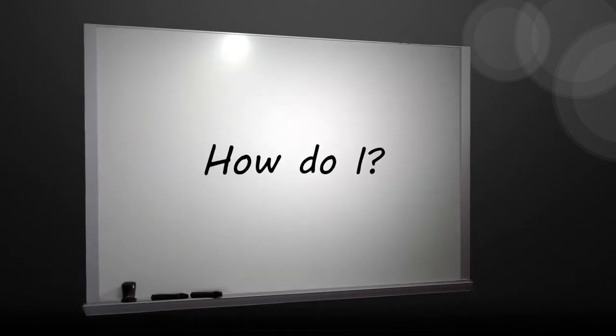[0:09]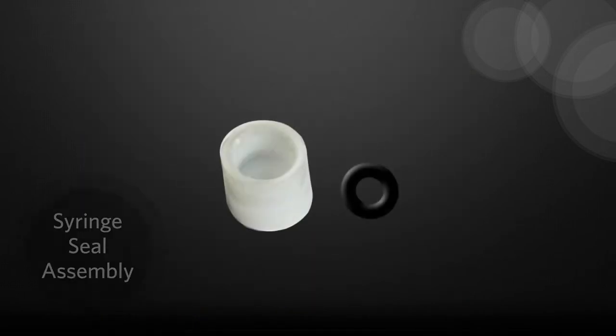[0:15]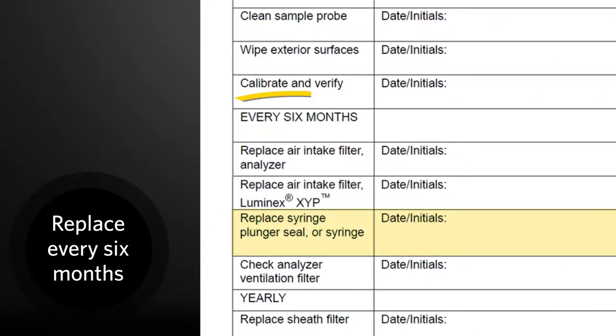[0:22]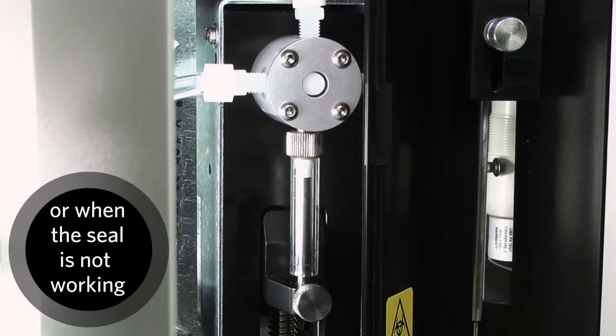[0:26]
How do I replace the syringe seal on the Luminex 200 instrument? Let's take a look at the procedure for removing and replacing the syringe seal. This routine is part of the semi-annual maintenance schedule, or is to be used if the seal is not performing properly.
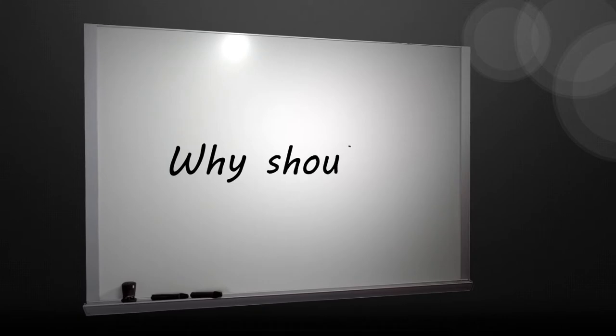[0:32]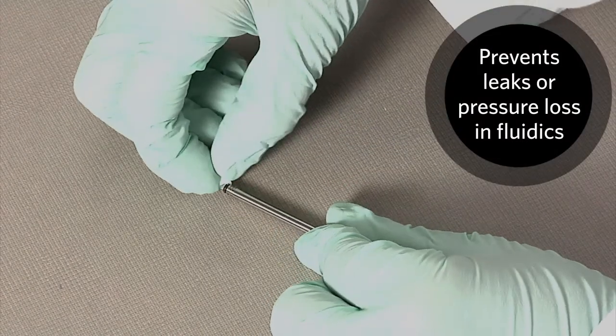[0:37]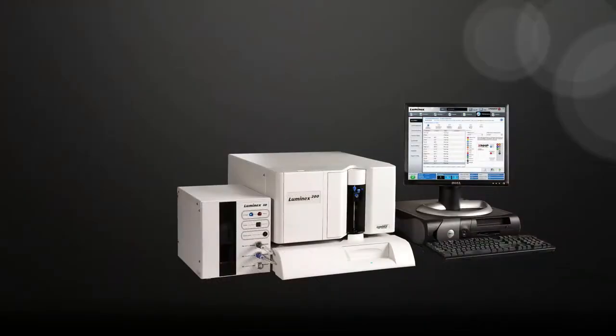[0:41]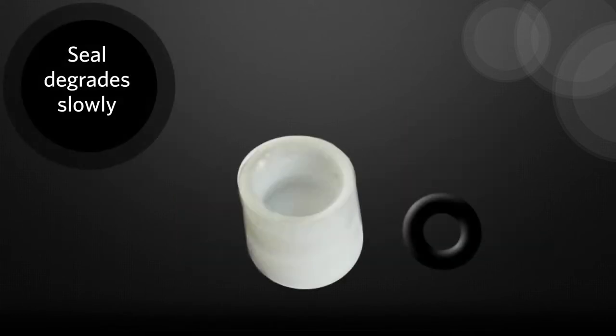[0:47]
Why should I replace the syringe seal? Replacing the seal will prevent leaks or pressure loss in the fluidics system. This is a preventative maintenance procedure to avoid any downtime on the Luminex 200 instrument. In normal use, the seal will degrade slowly.
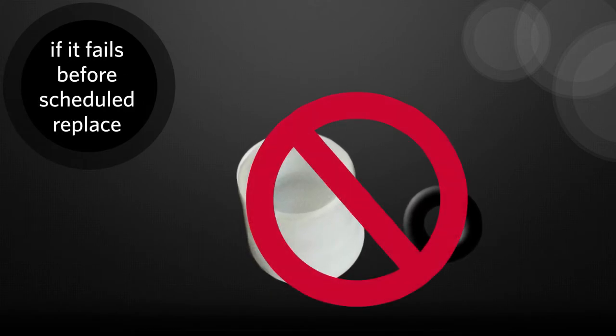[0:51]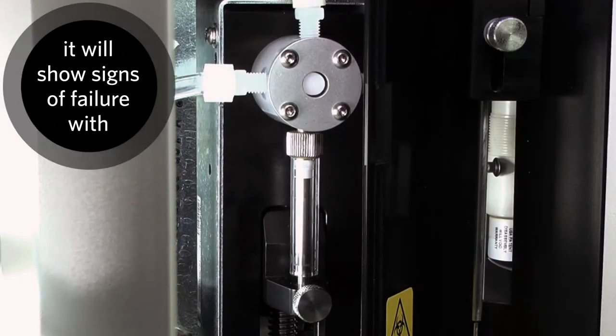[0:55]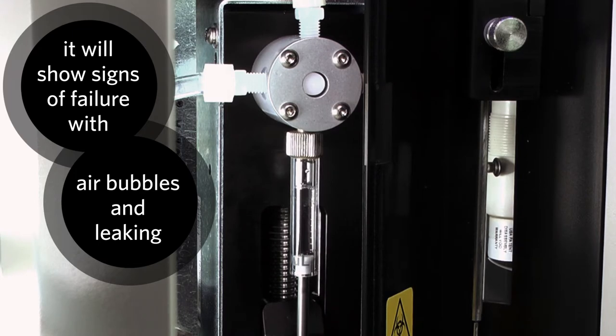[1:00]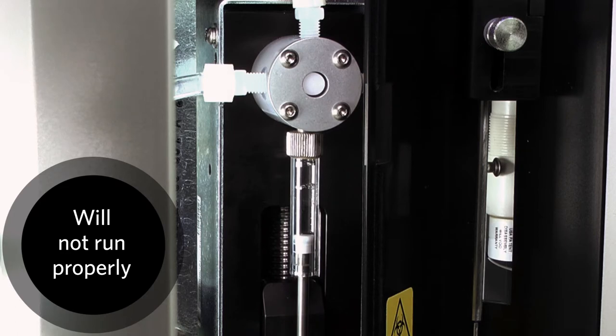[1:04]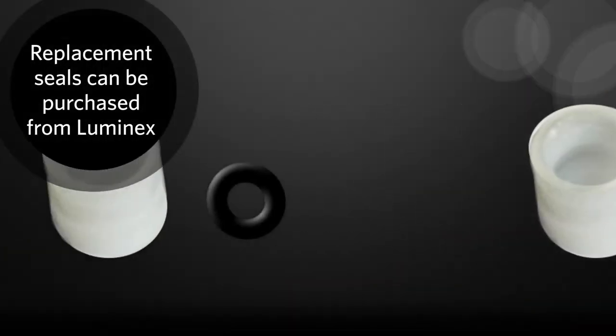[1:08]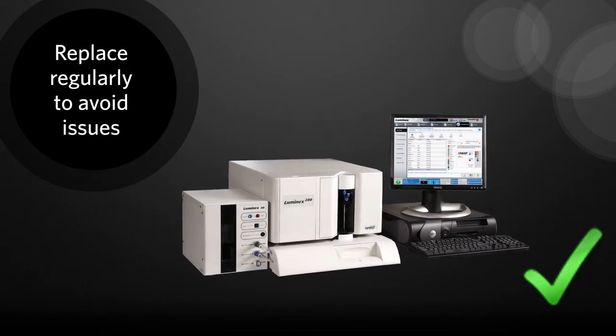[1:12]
If the seal does fail before the scheduled replacement, the two most obvious signs will be air bubbles in the syringe cylinder and liquid leaking from the syringe assembly. The Luminex 200 cannot run properly if the seal is broken. Syringe seals are available for purchase from Luminex. Regular replacement of the seal should help avoid any issues with the seal and keep the Luminex 200 working properly.
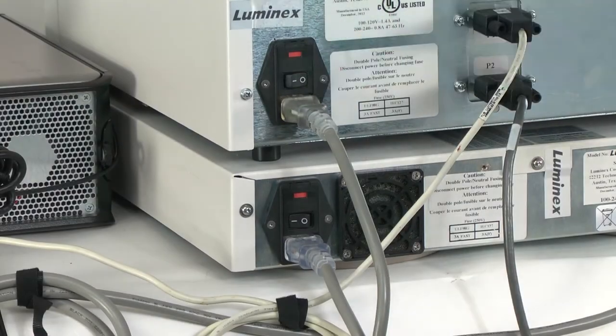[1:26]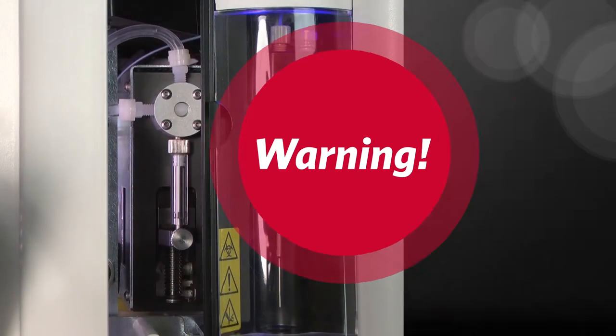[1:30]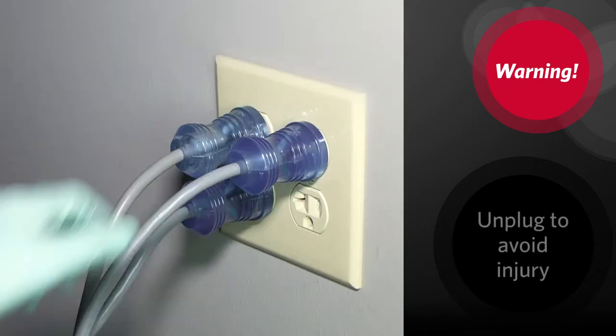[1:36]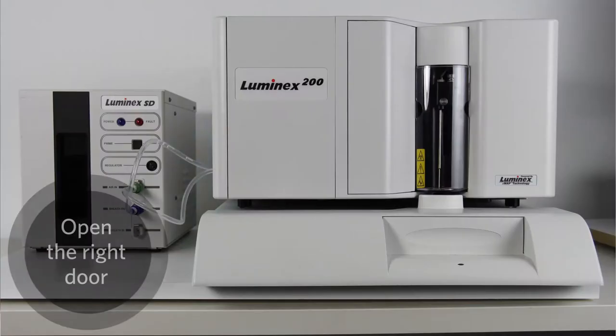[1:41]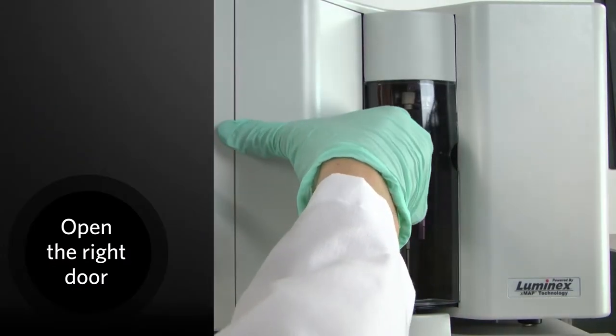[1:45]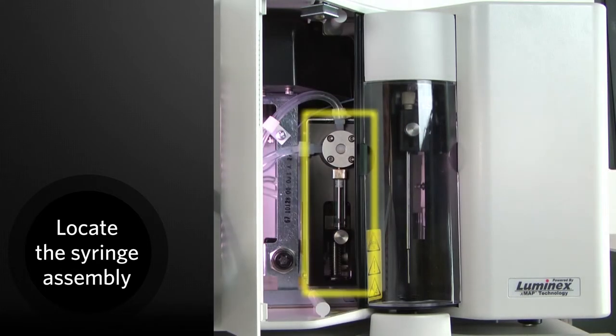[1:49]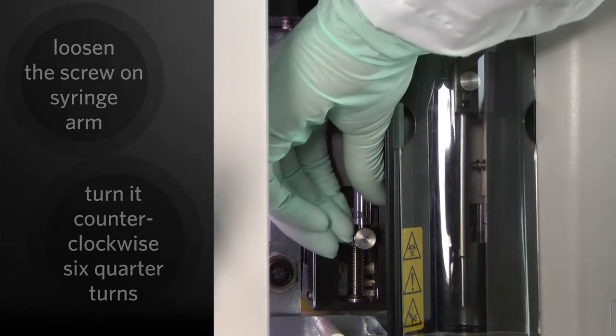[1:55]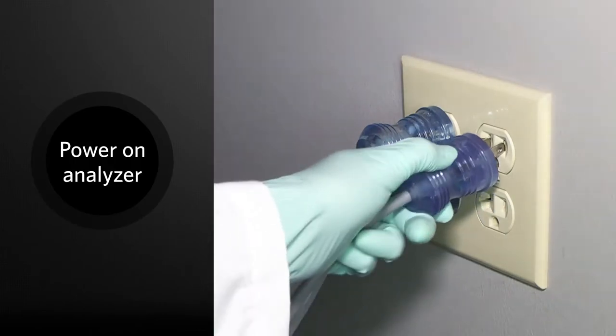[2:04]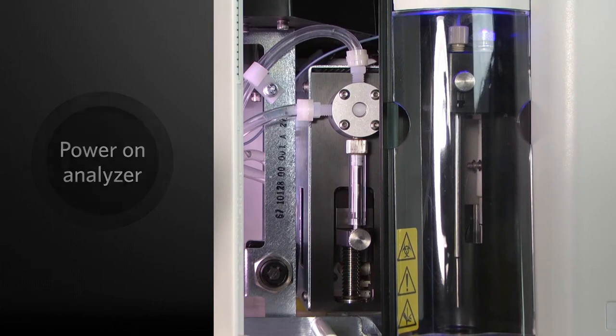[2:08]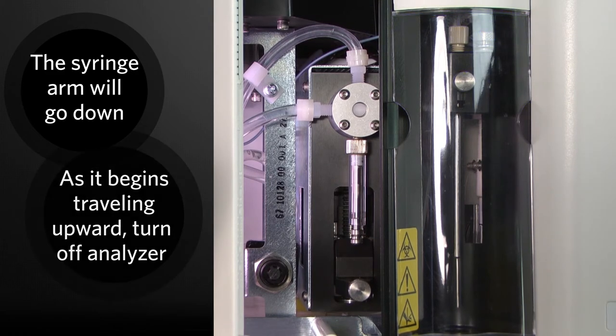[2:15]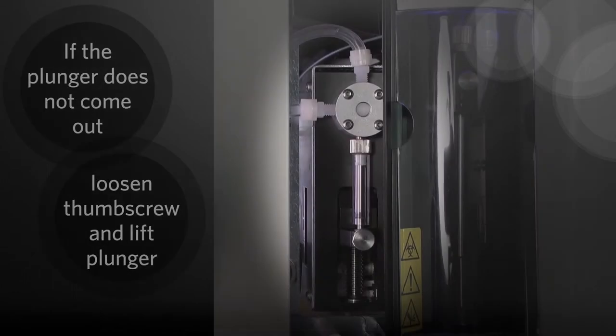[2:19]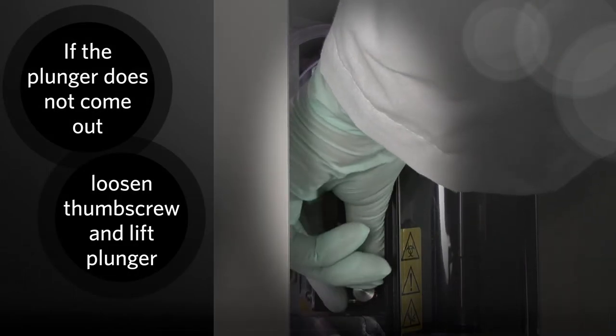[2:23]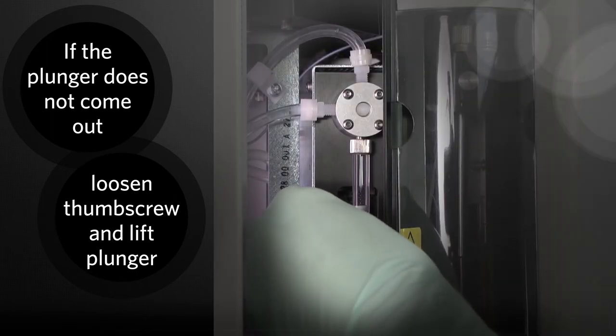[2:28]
Within a few seconds, the syringe arm will go down, then start going up again. As soon as it begins traveling upward, turn off the analyzer. If the base of the plunger did not come out of the arm when it cycled, loosen the thumb screw a little more and very lightly attempt to lift the plunger away from the base.
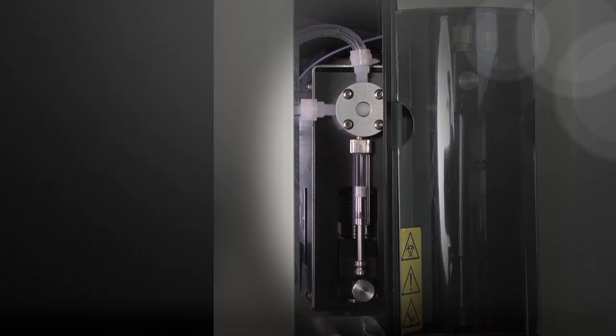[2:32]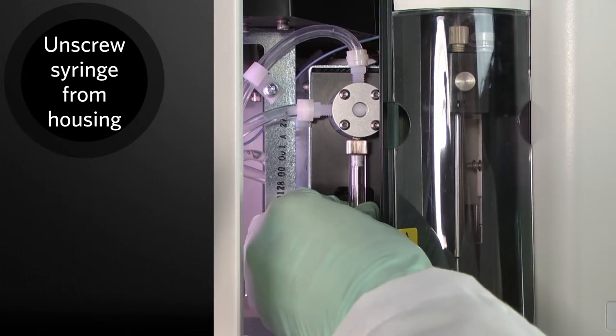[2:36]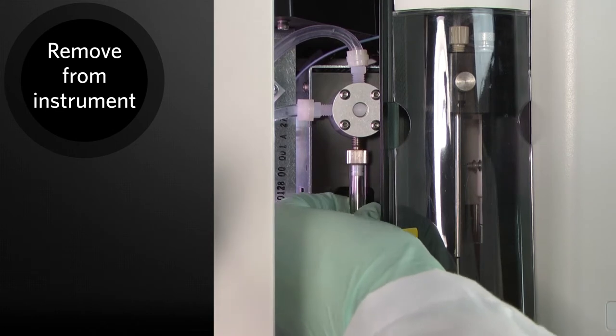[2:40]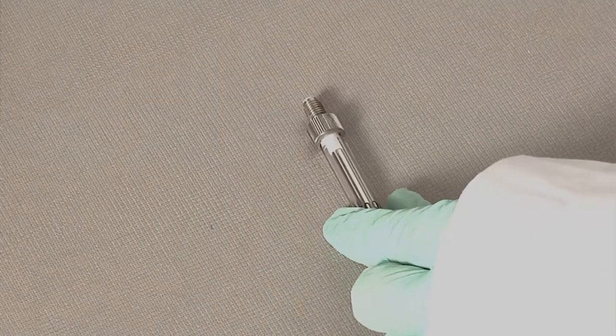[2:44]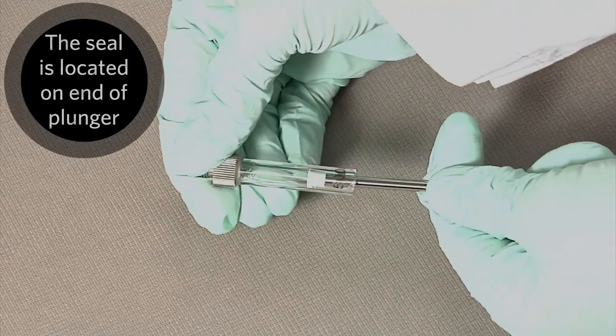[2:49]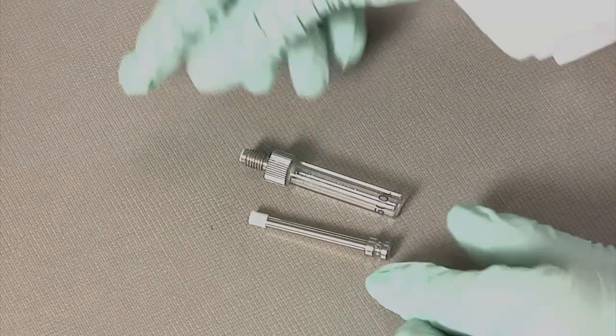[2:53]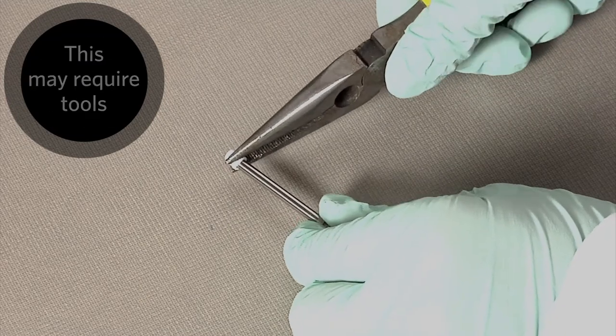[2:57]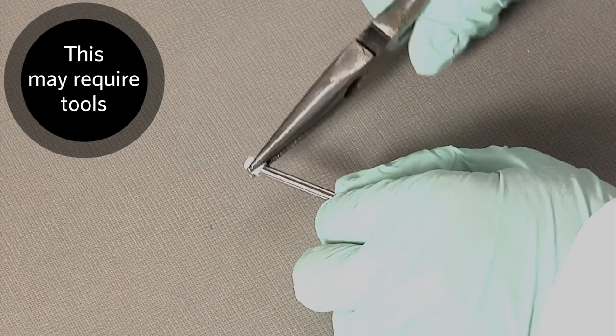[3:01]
Unscrew the syringe from the top of its housing. This will free the syringe from the instrument. Remove the plunger from the inside of the syringe. The seal is located on the end of the plunger. Remove the cap from the end of the plunger. Note: tools may be required to remove the seal if it cannot be done by hand.
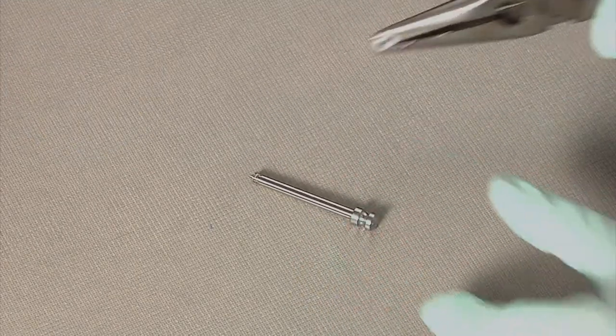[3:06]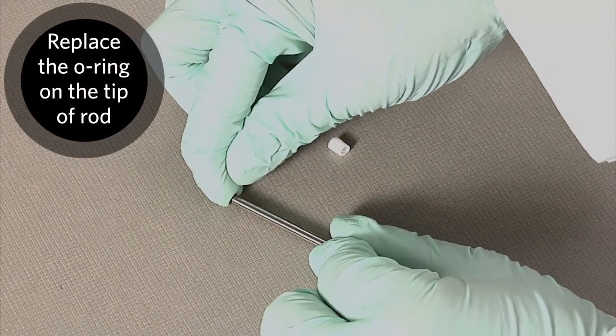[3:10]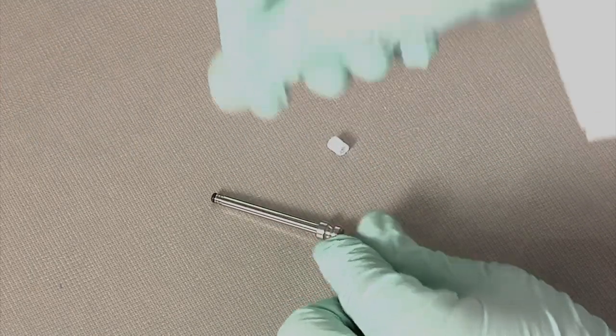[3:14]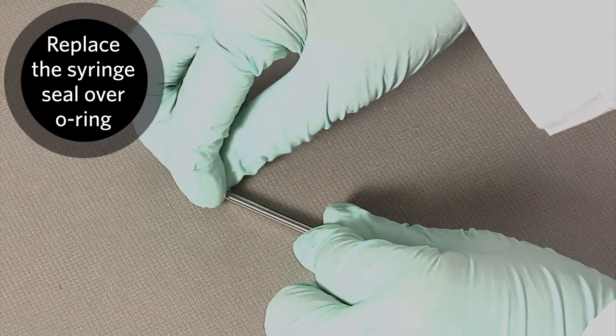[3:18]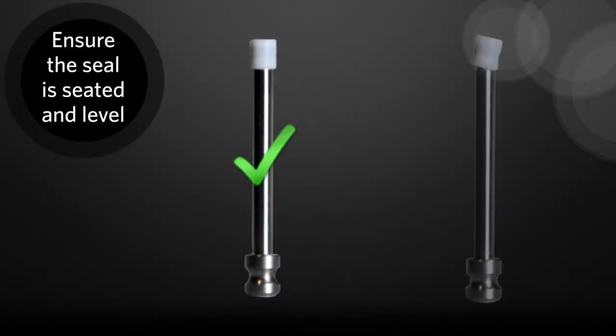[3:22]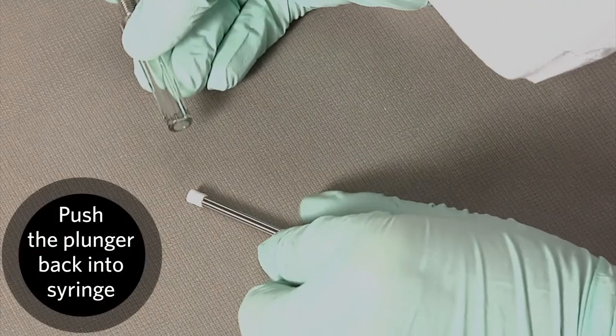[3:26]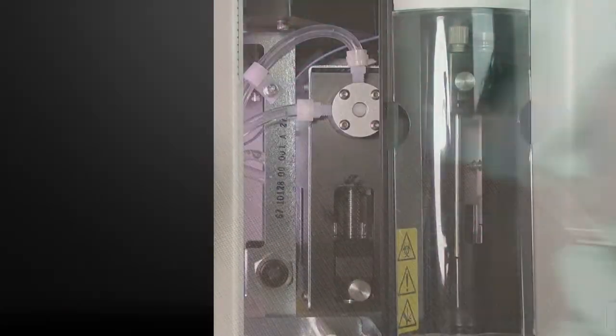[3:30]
Replace the O-ring on the tip of the plunger rod. Then, replace the syringe seal over the O-ring. Ensure the seal is fully seated and the top is level. Push the plunger back into the syringe. Screw the syringe into the top of its housing.
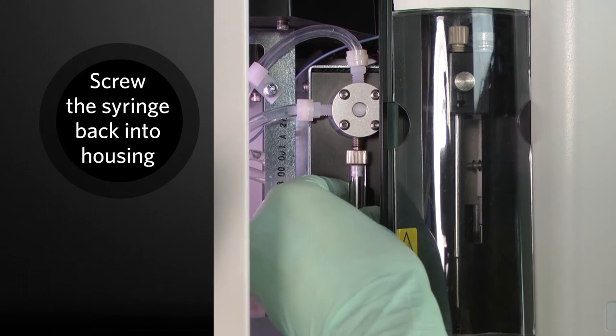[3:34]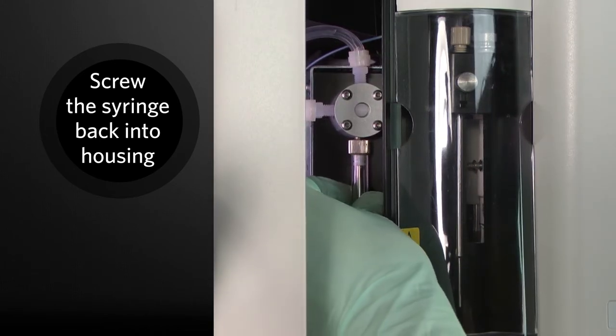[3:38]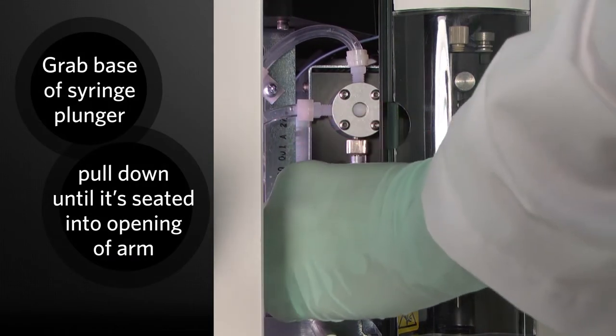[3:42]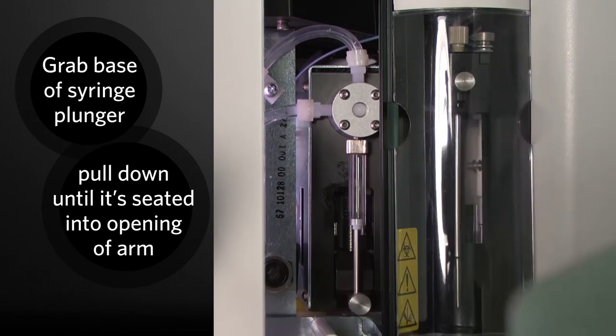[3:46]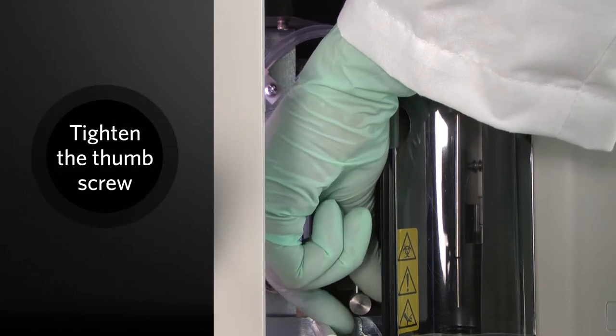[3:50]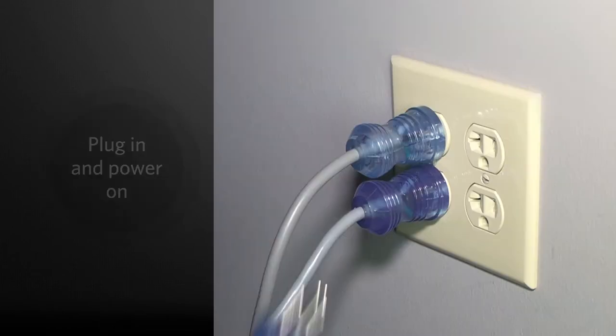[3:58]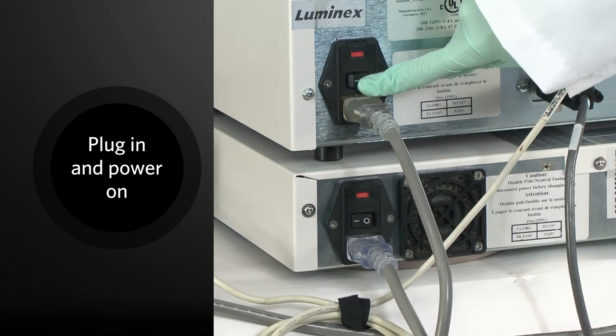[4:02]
Grab the base of the syringe plunger and gently pull on it until it is fully seated into the opening of the arm. Tighten the thumb screw on the syringe arm. The Luminex 200 analyzer can now be powered back on. The syringe will return to its home position before the analyzer begins its normal startup process.
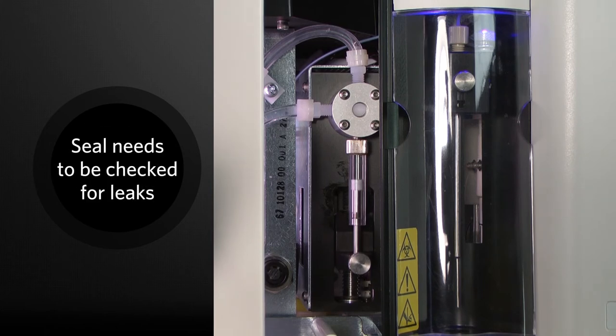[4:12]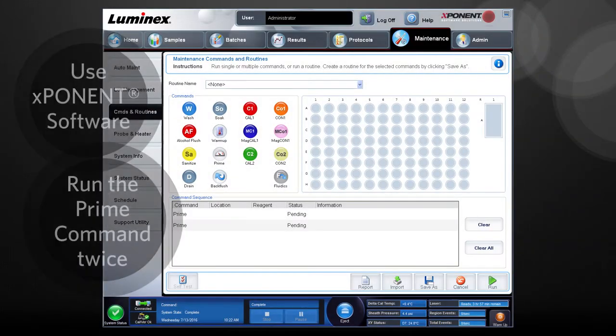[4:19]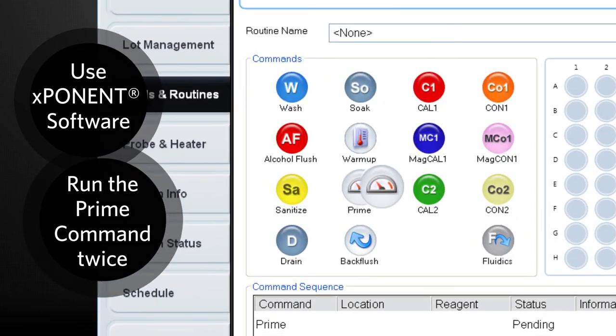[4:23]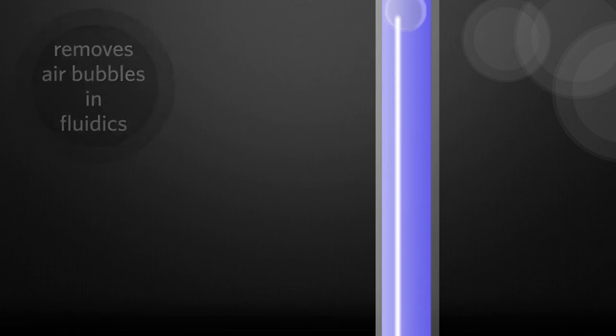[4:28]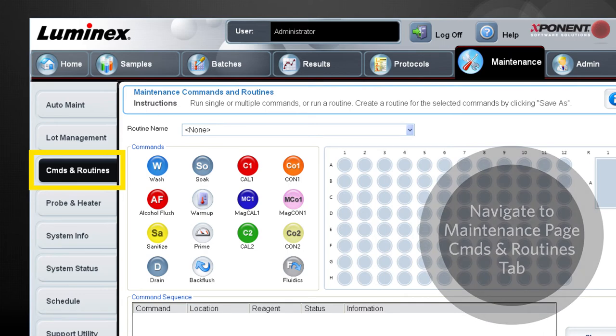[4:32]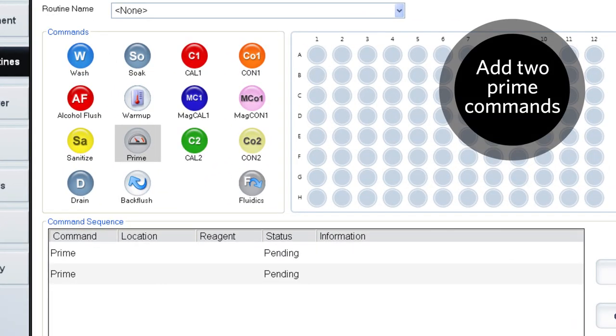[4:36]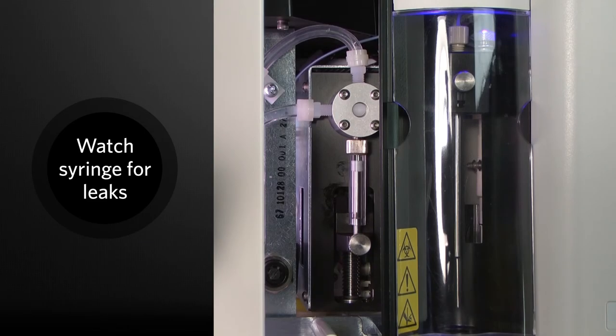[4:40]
Before using the instrument, the syringe seal needs to be checked for leaks. Using xPONENT software, run the prime command twice. This will remove any air bubbles in the fluidics lines. Navigate to the Maintenance page, Commands and Routines tab. From the commands list, click on Prime twice to add it to the command sequence. While the routine is running, watch the syringe for any leaks.
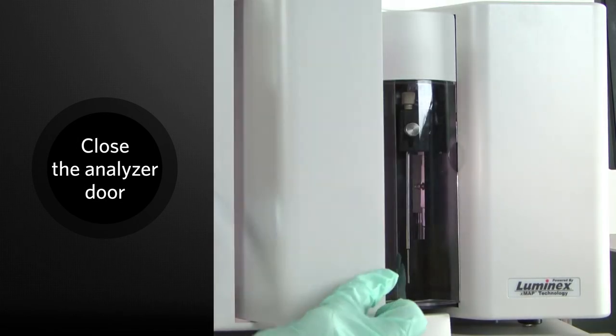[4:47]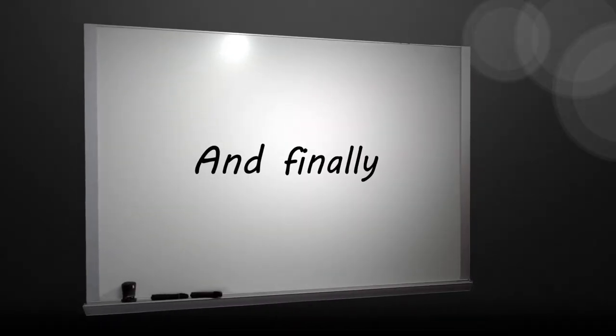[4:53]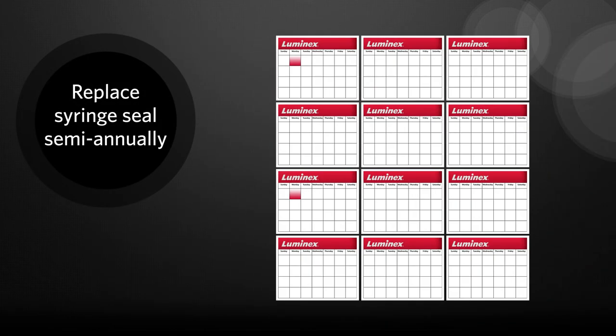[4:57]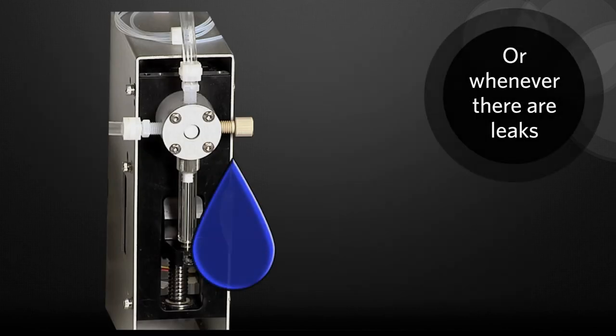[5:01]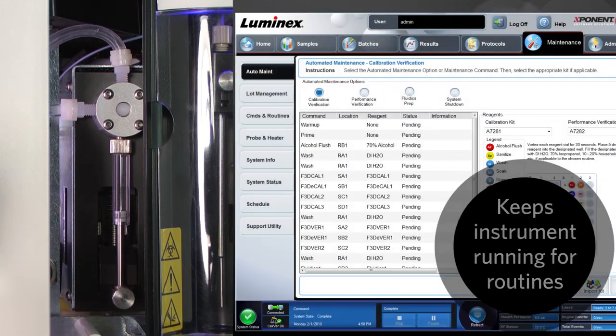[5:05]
Close the door on the Luminex 200. And finally, remember: to change the syringe seal as part of your semi-annual maintenance, or when there is a leak, a properly working syringe pump keeps the Luminex 200 working for all commands and routines.